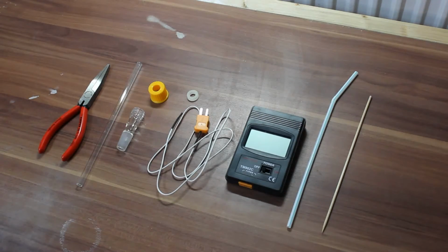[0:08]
Today we'll build a digital thermometer probe to monitor the temperature during distillation. Okay, so here's what you'll need.
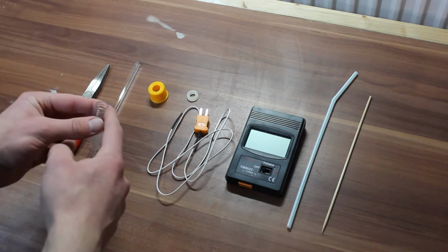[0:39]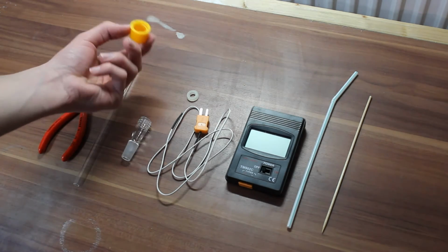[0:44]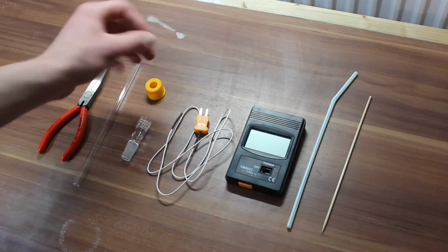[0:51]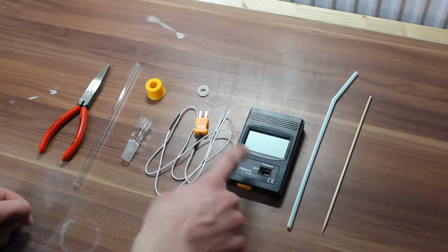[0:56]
Some pliers, a piece of 8mm glass tubing, a ground glass joint to thread adapter that fits your still head. So in my case it's an NS14/23 ground glass joint to a GL18 thread adapter, a fitting nut with a hole in the middle, one of these rubber washers with a Teflon liner, and of course a thermocouple and a way to read it out.
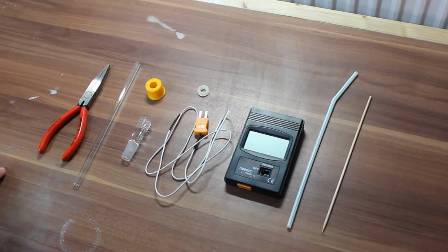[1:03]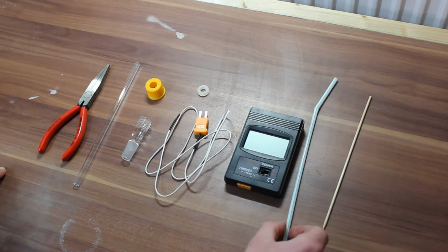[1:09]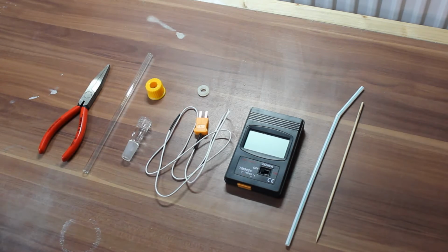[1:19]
You could also use a multimeter if it supports thermocouples, but you can get these off of eBay pretty cheap. And then a straw and a skewer. Apart from that, you'll also need some way to heat the glass. So I'm just using a little Bunsen burner, and you need some thermal conductivity paste. Okay, so let's get started.
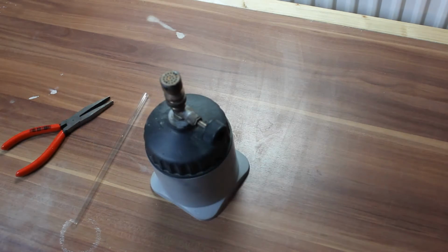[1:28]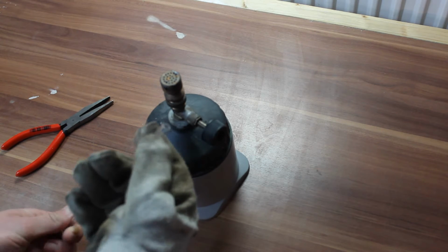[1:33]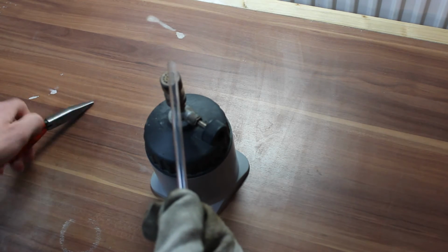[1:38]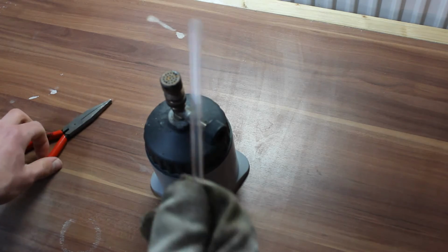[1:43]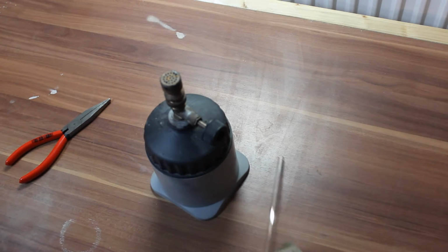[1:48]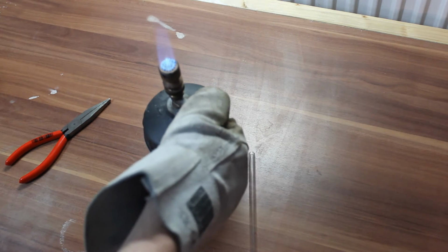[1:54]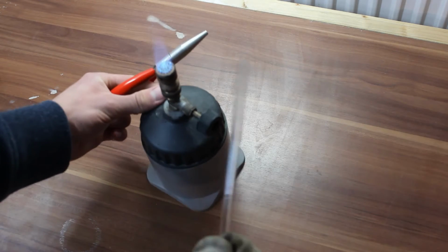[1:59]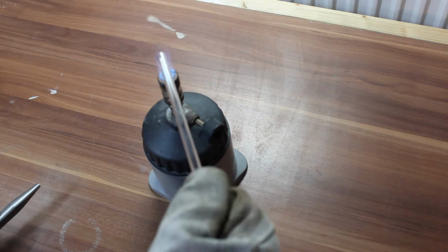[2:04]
So the first thing we'll have to do is to melt this piece of glass tube shut. So we're just going to heat it and then pinch the end with some pliers to close it. Make sure to wear some gloves that can handle the heat. Okay, so let's fire this up. And we'll start heating the glass tube. Be sure to heat it evenly so it doesn't crack.
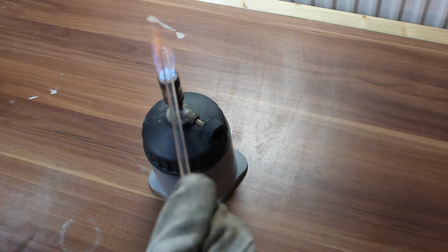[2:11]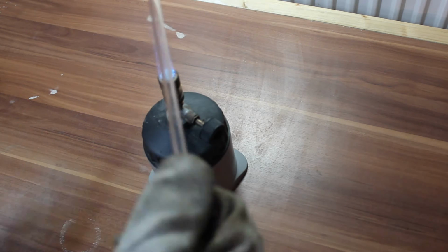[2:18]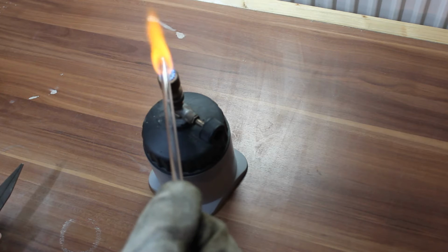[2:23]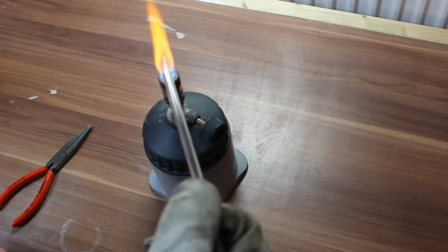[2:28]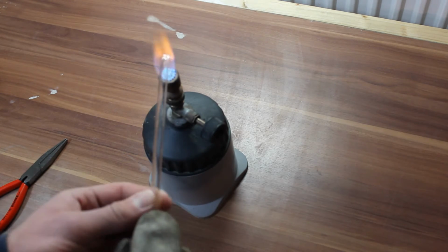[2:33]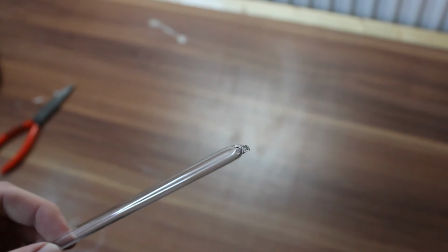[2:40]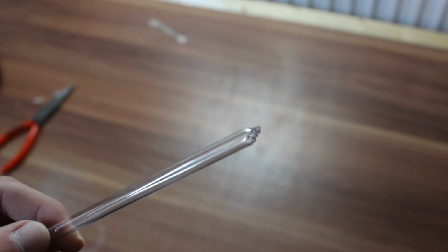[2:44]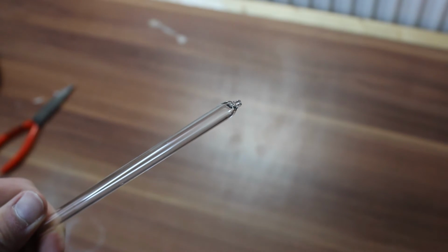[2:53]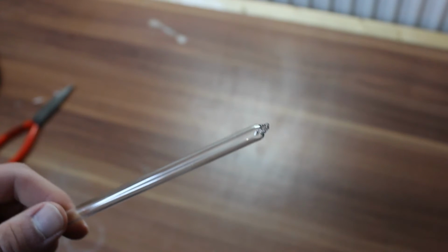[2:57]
Okay, now the glass tube is shut, and I'll admit it's not the prettiest thing I've ever done, but it does its job. Okay, so next thing we're gonna do is to put some thermal conductivity paste right here at the tip. See you in a bit.
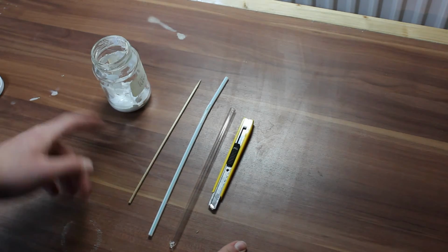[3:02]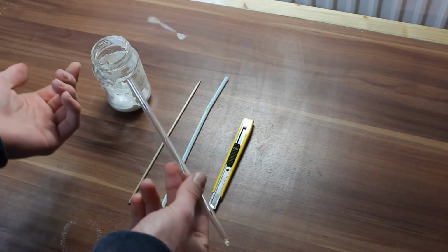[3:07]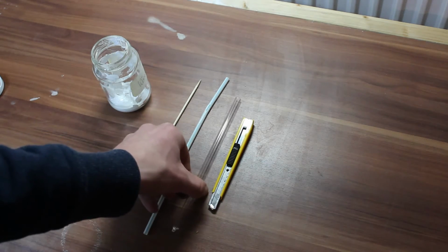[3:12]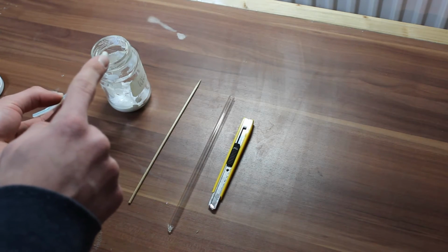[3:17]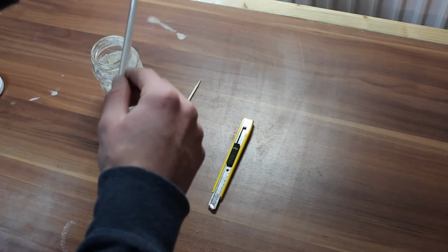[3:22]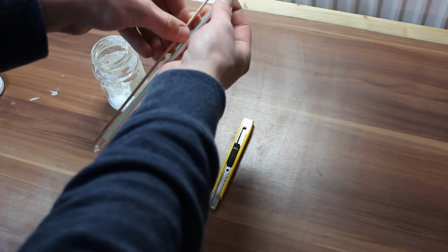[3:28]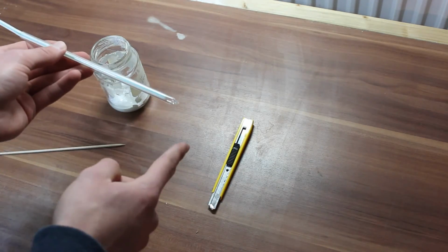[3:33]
Now we have to get some thermal paste to the bottom of this glass tube, but if you were to just shove it in, we'd probably lose everything on the side walls. So I figured the best way is to take a straw and put a dab of thermal conductivity paste right here in the bottom. Then you can push the straw in and use a skewer to push the paste out the bottom, so you only get thermal conductivity paste where you want it and not smear everything on the sidewalls.
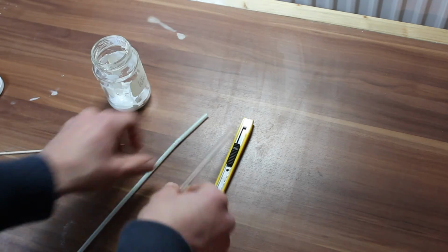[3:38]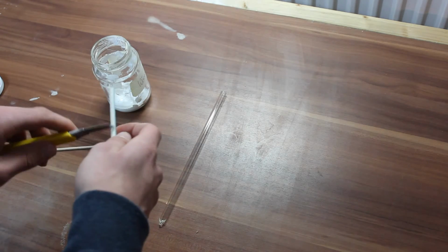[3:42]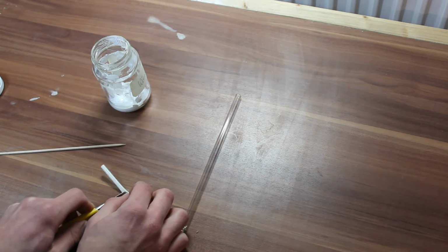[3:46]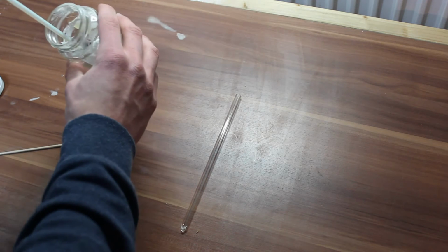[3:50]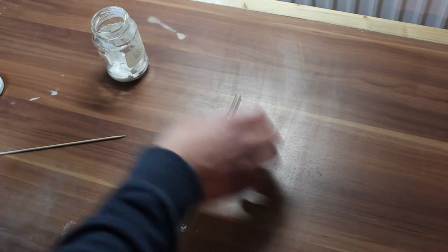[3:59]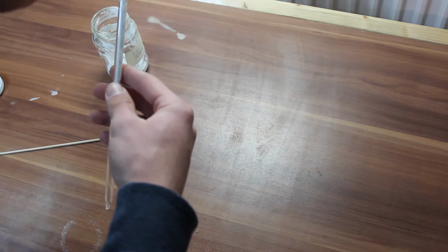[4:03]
Okay. So first off, we have to shorten the straw a little bit so we can actually reach the bottom with our skewer. Now that's done, we take some paste. That should do the trick, and we push it in. Be careful not to push the straw in too far because you'll not get it out.
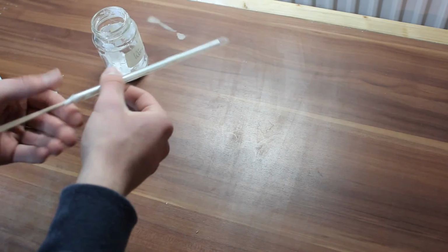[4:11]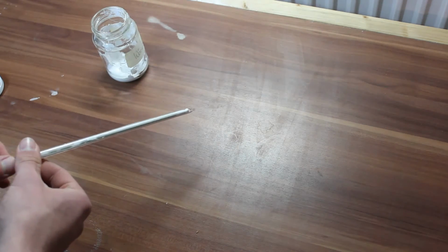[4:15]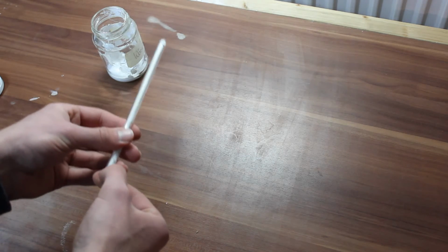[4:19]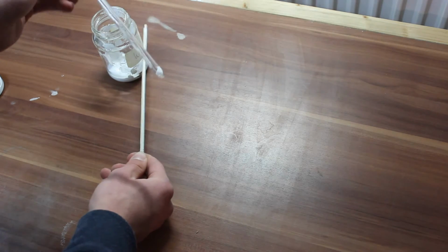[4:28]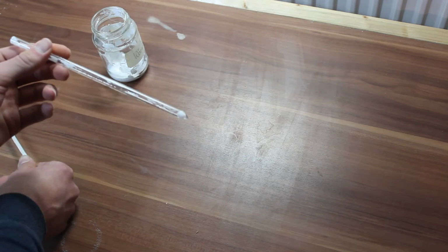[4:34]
Now we use the skewer to push the paste out the bottom, and there we go. Now we can pull them out. And now we've got some thermal conductivity paste right where we want it.
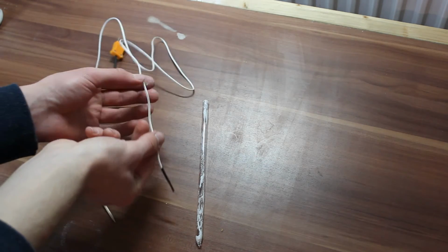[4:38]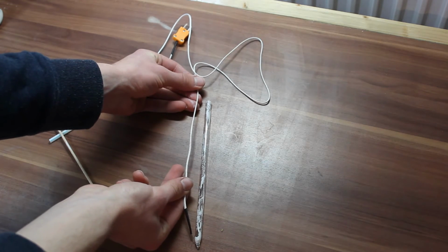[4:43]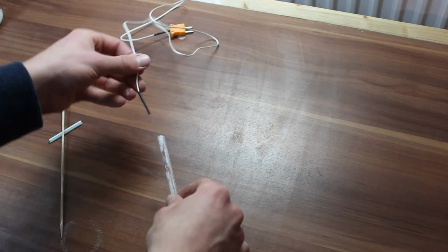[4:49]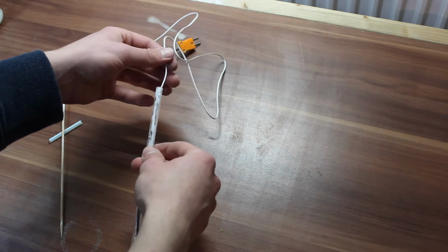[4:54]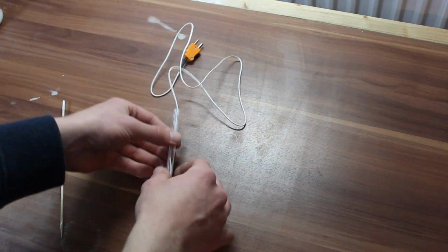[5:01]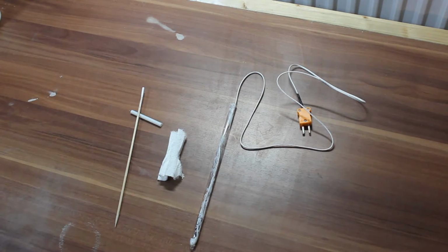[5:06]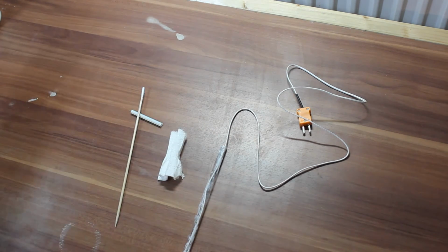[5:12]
Now we have to get the thermocouple down the tube so that the tip actually reaches to the very bottom. And this is also done using our trusty skewer. So let's start feeding it in there. We might not even need the skewer. Okay. So we're pretty much done here. All that's left to do now is to tape the thermocouple wire down so it doesn't accidentally get pulled out.
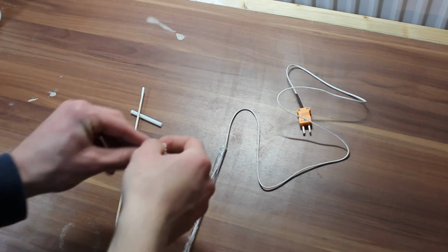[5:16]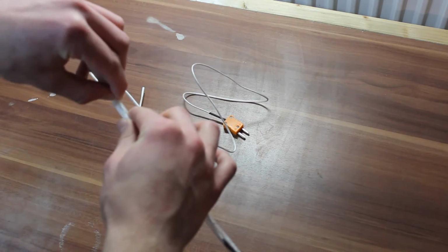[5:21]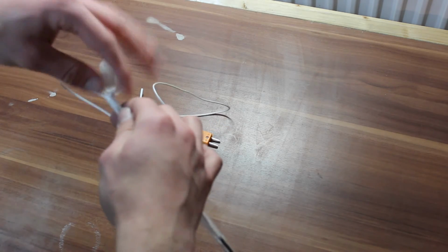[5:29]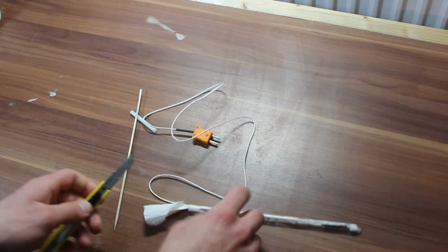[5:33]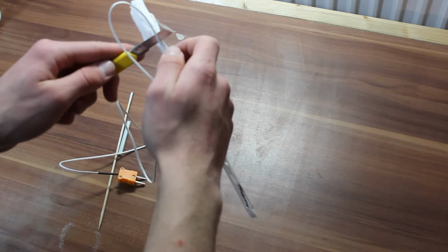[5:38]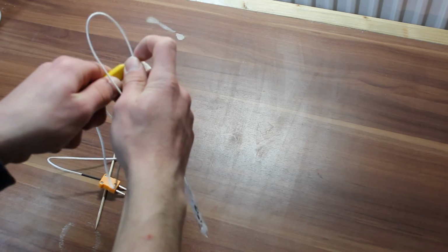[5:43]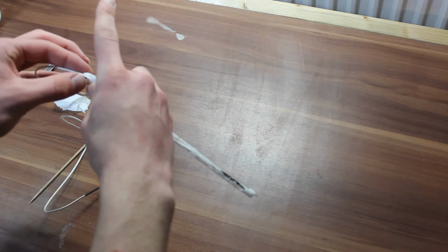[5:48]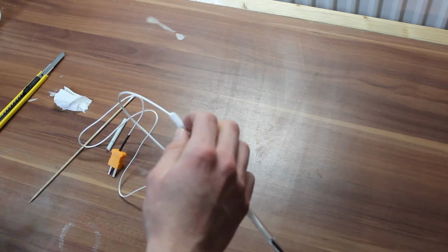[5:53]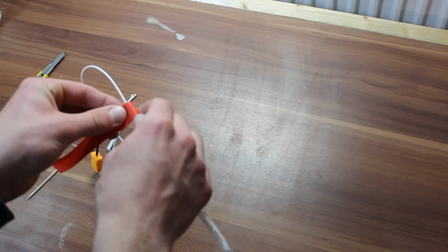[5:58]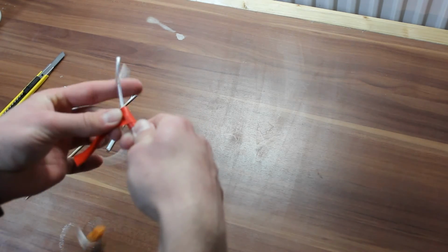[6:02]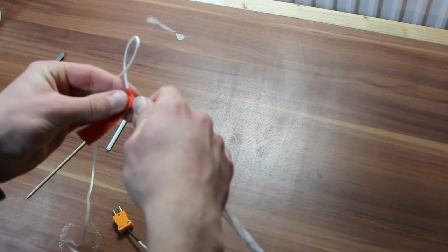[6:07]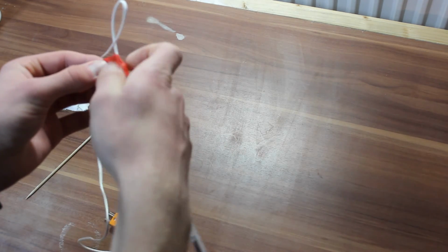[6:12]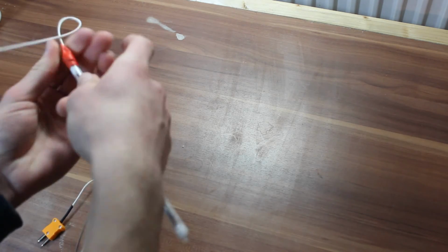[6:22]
Okay, first we're just going to push in a little bit of paper towel. Okay, that should be enough. Cut off the rest. Another piece of electrical tape. Again, not pretty, but functional.
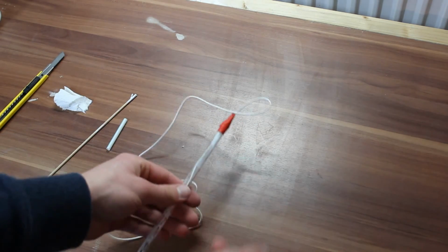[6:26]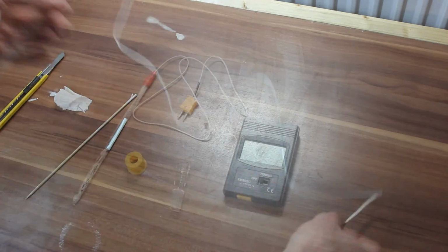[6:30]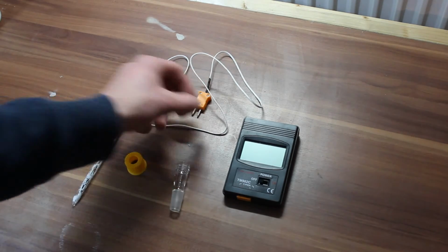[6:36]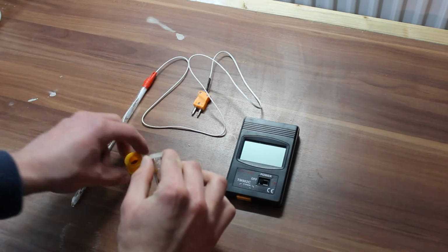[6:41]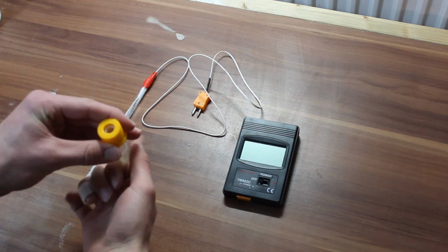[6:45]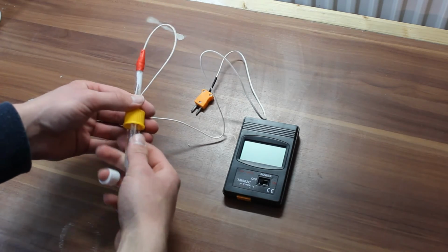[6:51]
Okay, so here we are. That's our probe finished. As for how to use it, it's actually pretty straightforward. We take our rubber washer, put it on there, then screw the cap on, and then we can push our glass rod through here and really tighten the cap down.
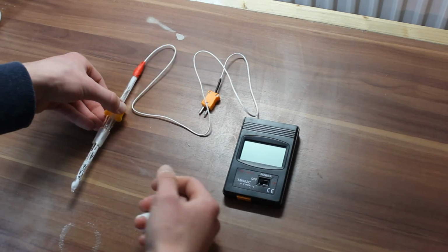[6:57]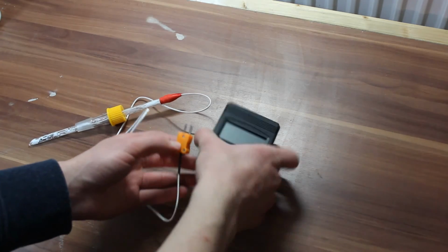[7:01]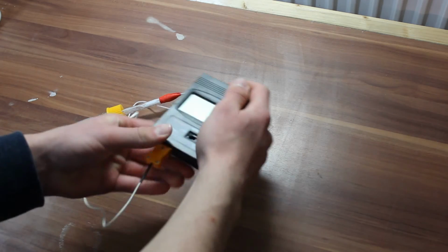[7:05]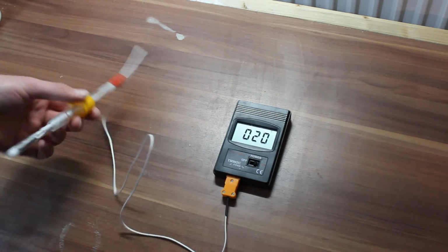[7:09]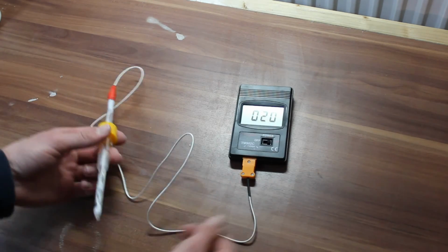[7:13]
Then the end is plugged into our digital thermometer. And if we turn that on, you can see it's actually 20 degrees centigrade in here. If I warm this up using my hand, you can see the temperature rise.